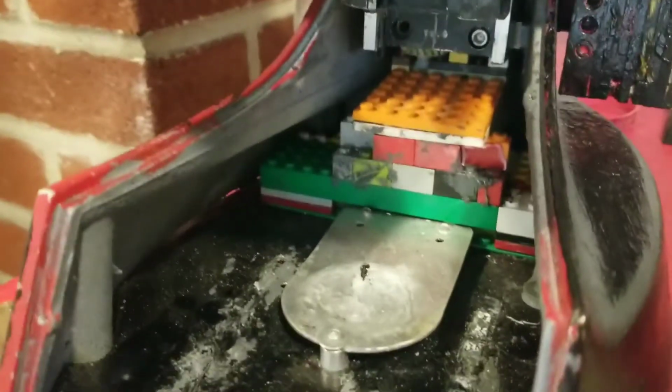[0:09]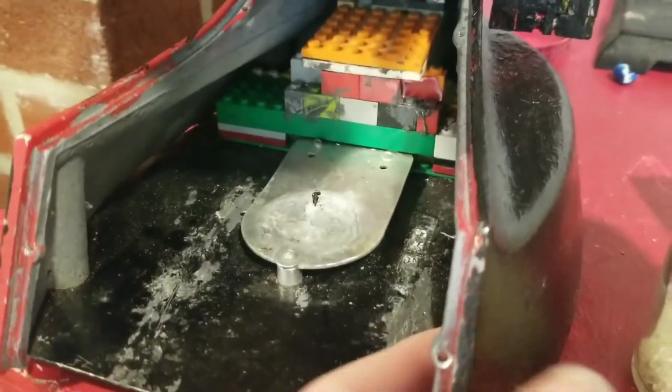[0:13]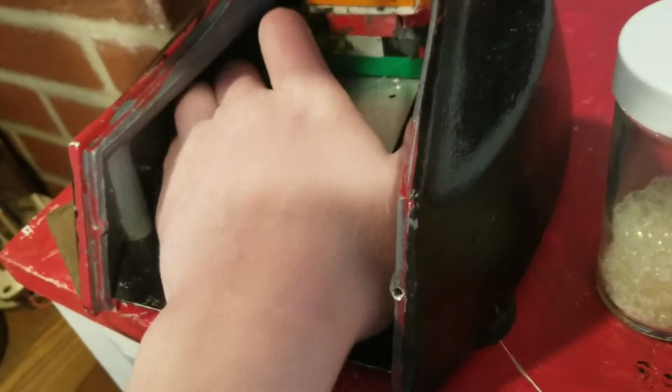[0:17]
So anyway, I'm going to repair my microscope. You can kind of see a little space there, and that is because one of the screws that I screwed in, I used Loctite, and I tried to unscrew it. I broke it off, so yeah.
What I'm going to do is I'm going to remove the head first. It seems like about the right length, and this thing is about the right width. So what I'm going to do is I'm going to use my drill and get through there. Here we go. So this entire thing has been drilled out. Now it is time to stick this thing through. Go nice and tight, just like I want it to be.
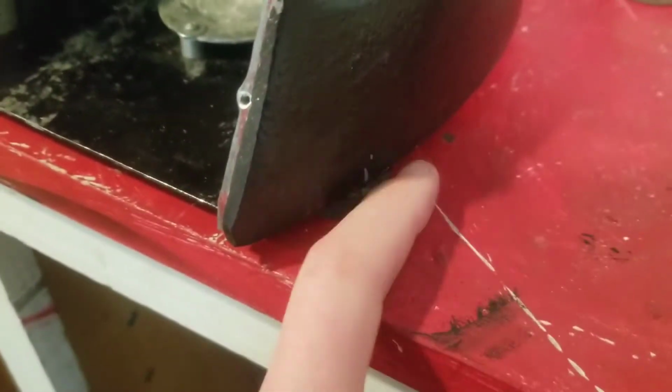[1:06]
Now I gotta take this thing and essentially I've gotta super glue it back on where we go. I added these things on that I found while cleaning the basement because it was scratching up everything. Because I used screws in all of these holes, and I lost the rubber things that go on the bottom, so I have these ones instead, which work almost as good. Anyway, now to reassemble the head.
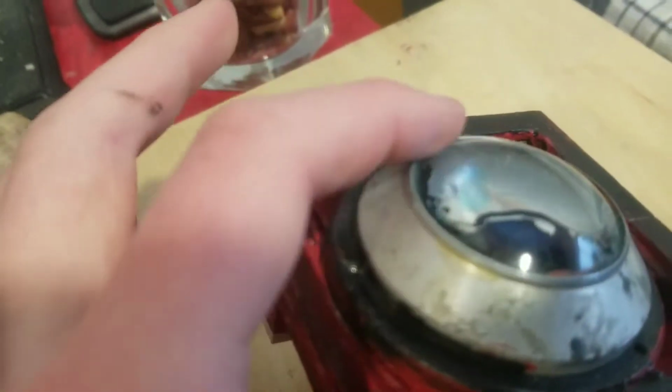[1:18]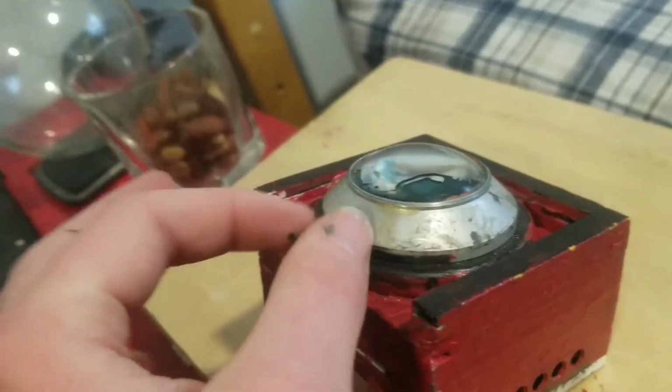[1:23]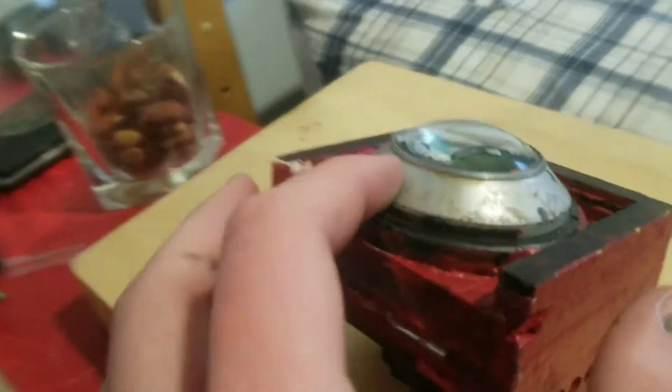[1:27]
Remember me putting this together? I don't know if it's even posted still, but I put this together. I added a polarization filter, and then I took apart a magnifying glass and I added another lens in there. So there are two lenses. There are also two lenses up here, one big and one small, and an LED bulb. And what I'm going to set up is what is known as Kohler illumination.
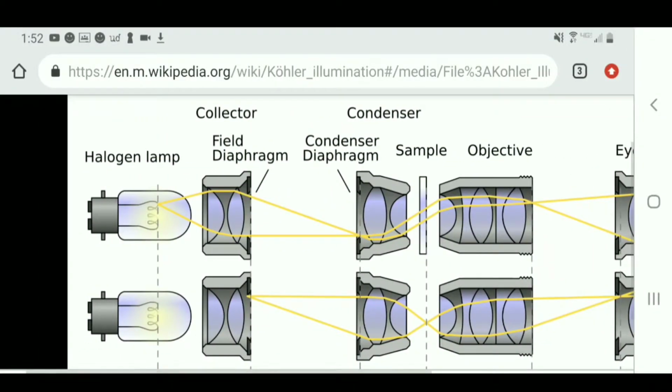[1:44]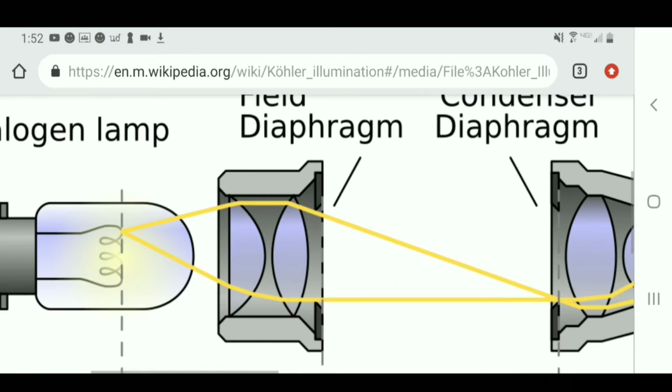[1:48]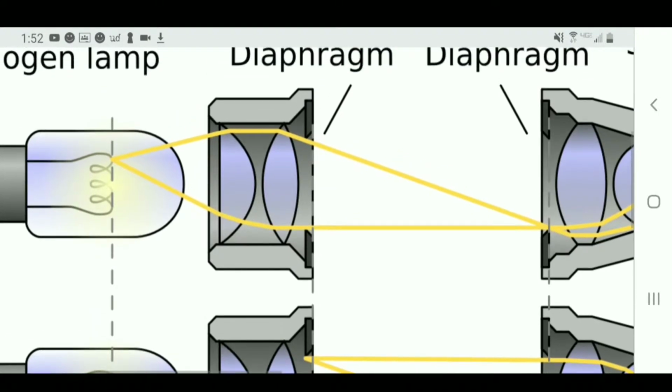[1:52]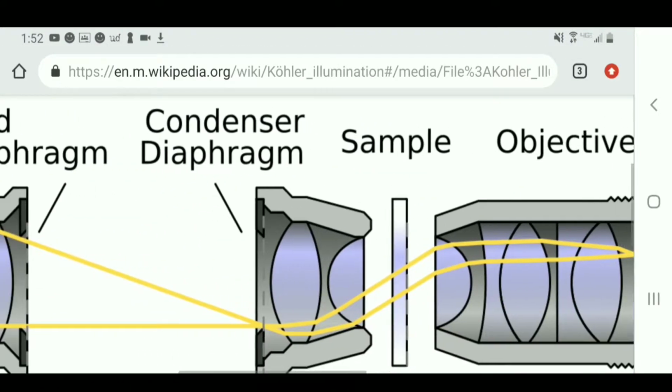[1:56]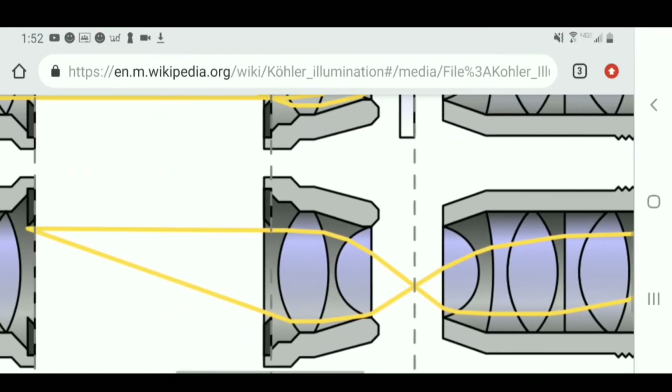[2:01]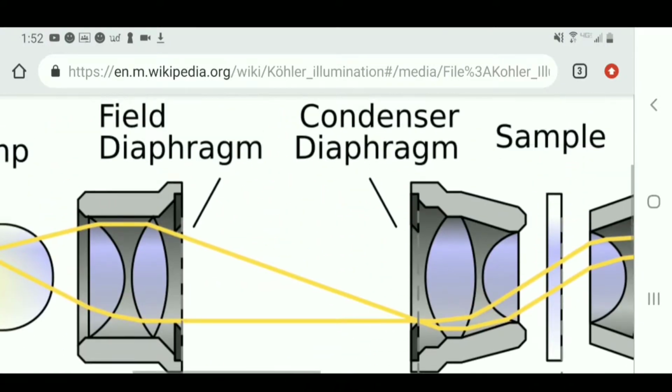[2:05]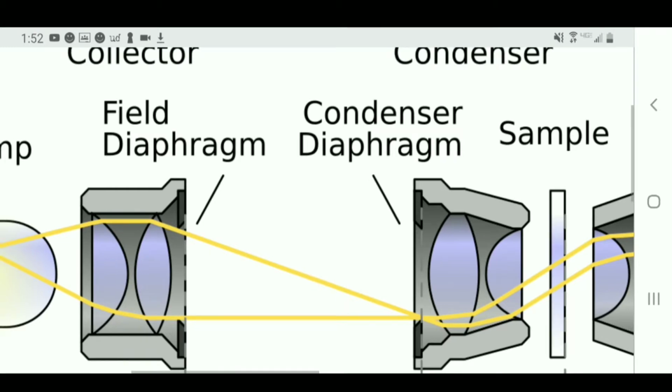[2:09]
Actually, Kohler illumination uses two optical lenses at the collector, just like I have set up. It uses two lenses at the condenser as well, and most importantly what it has is a diaphragm for opening and closing and adjusting light at the collector and the condenser, so it has two diaphragms.
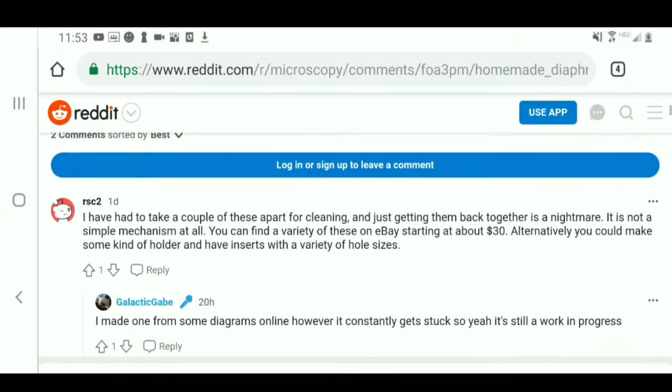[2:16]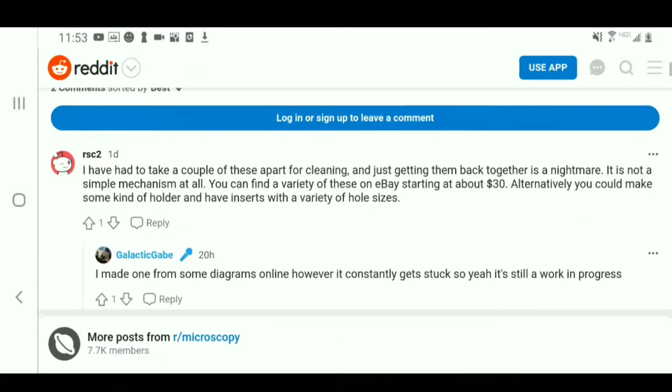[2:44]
My diaphragm, essentially what happened is it fell apart while I was trying to mess around with it when I was taking apart and fixing my microscope, and it was a bunch of pieces. It was really complex. I kept trying to fix it and put it back together, but the metal was really thin and sharp, and I kept cutting myself. I got really frustrated, and I just threw all the pieces of the diaphragm in the trash. So it looks like I'm gonna have to start from scratch on making a diaphragm.
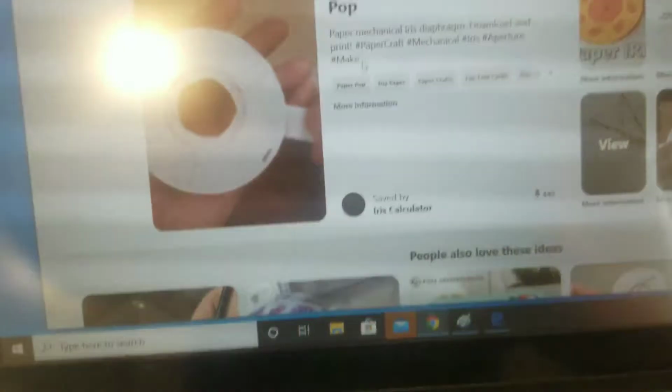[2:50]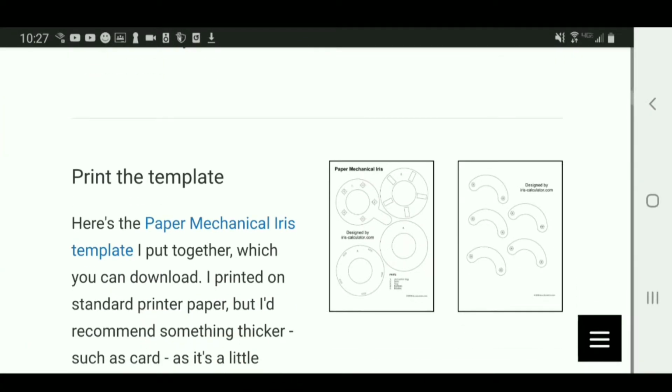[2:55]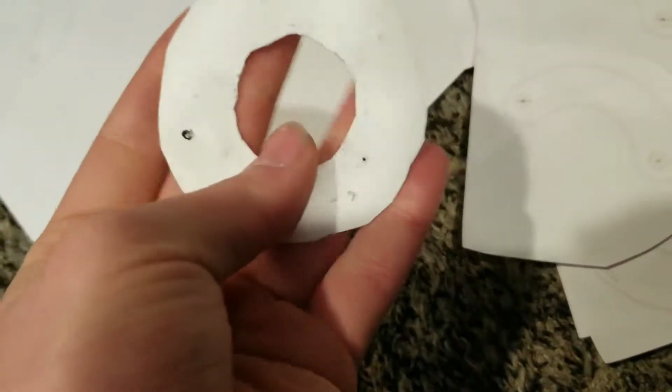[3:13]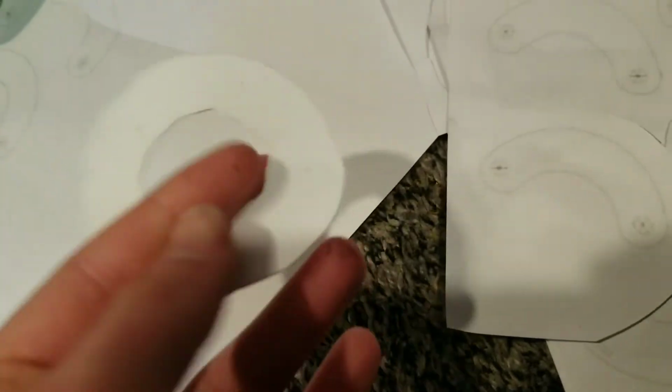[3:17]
As you can see, people do make paper diaphragms. I found a really good website with printouts, and I got the printouts and I sized them to be the right size. I printed them a few times and then I just got as close as I could. Cut them out a little bit, and then I realized that I don't really want paper ones. So what I did is I got some number 2 HDPE plastic shampoo bottles, and I basically replicated the cutouts, but I used plastic, which is a lot stronger than paper.
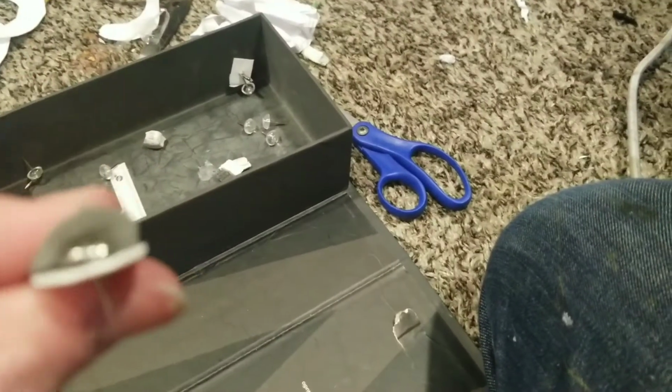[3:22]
See, I am adding one of these. I don't know exactly what they're called, but you can get them at arts and crafts stores, and they work a lot better than thumbtacks for this application. So I'm going to add a piece of tape over the entirety of it so that this thing is covered. The tape allows it to glide a lot smoother. So I'm going to hold the camera between my legs and just show you the opening and closing. Check that out. I finally got it working.
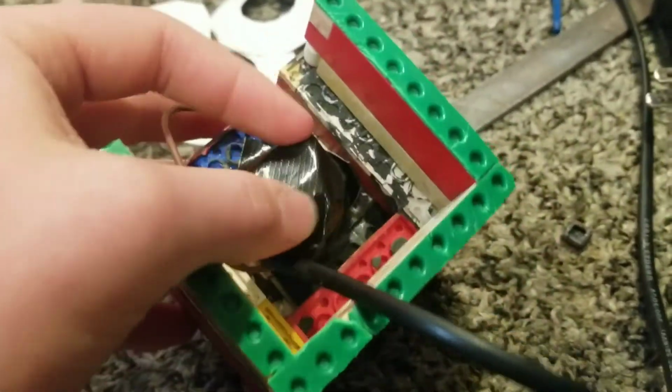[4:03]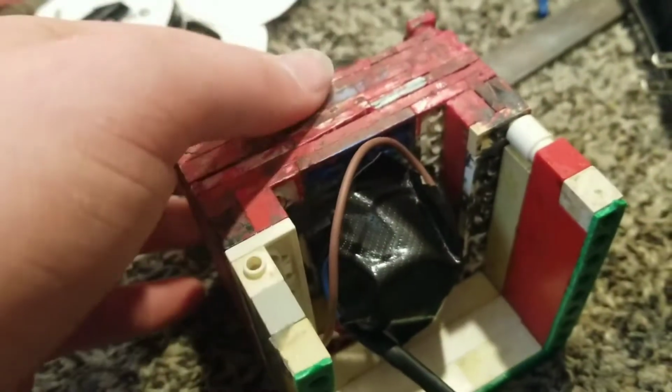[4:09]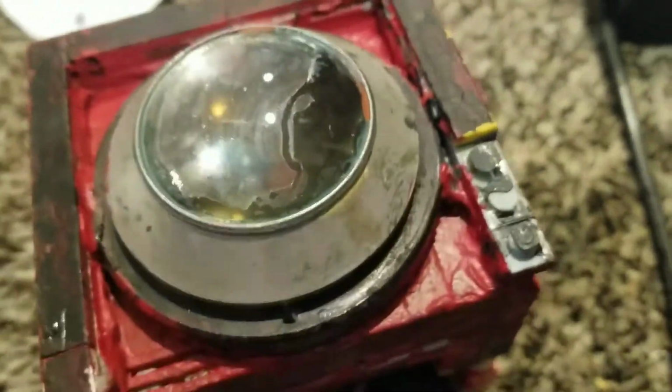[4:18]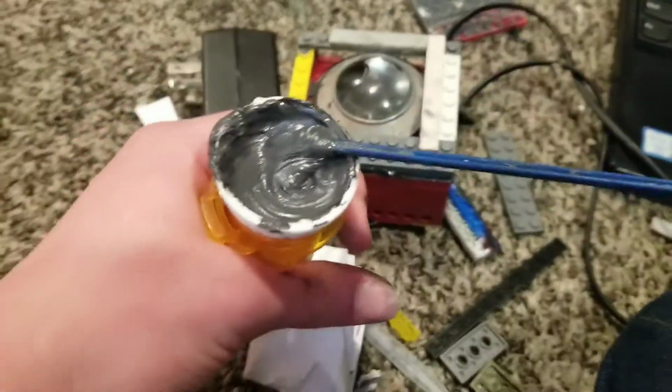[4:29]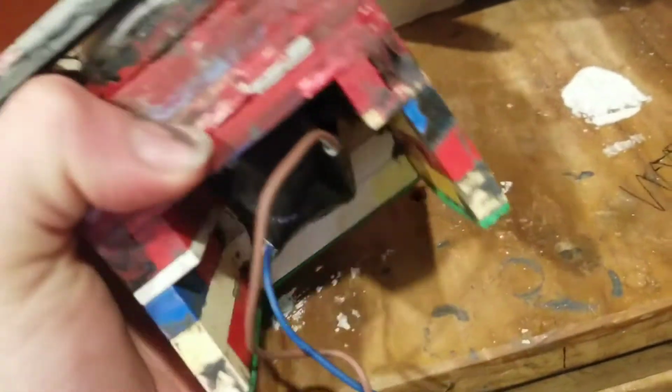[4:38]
This is the light from my microscope. As you can see, it's a bunch of JB welded together Legos and a 9-volt super bright LED light bulb, disassembled partially, and the head of the light bulb replaced with two lenses, just like one of those Kohler condensers. And now what I'm going to do is start building up around the edges again and JB welding it together. I'm JB welding together a top, and on top of this I will be able to add this assembly of the lighting system. I did it in two parts, but anyway.
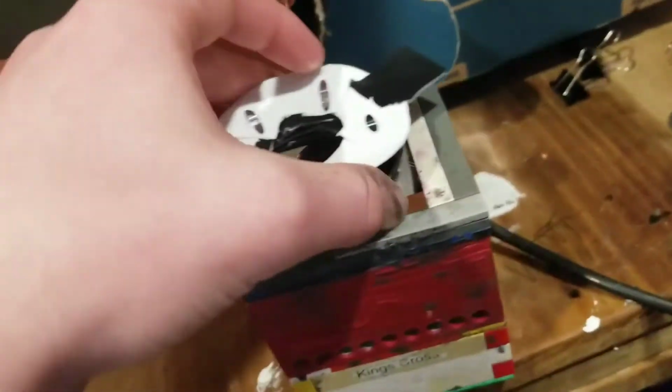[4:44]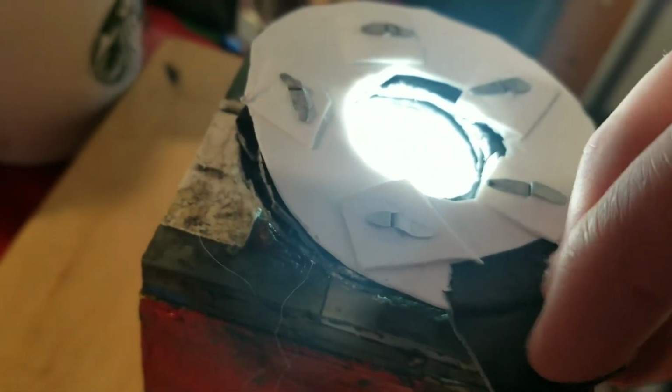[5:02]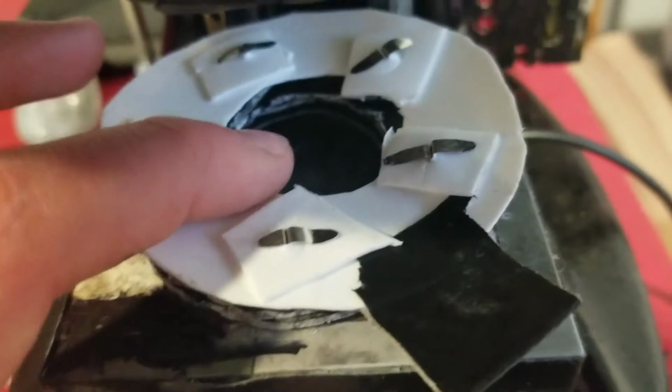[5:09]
And now it is time to center this way. Look at this. You can open and close it at will, allowing you to adjust the amount of light. Instead of having two diaphragms, since it took so dang long and it was so frustrating to build this single diaphragm, I've decided to have one diaphragm on top of the collector, since I don't really need a second one, since I do have a dark field filter and polarization for up here.
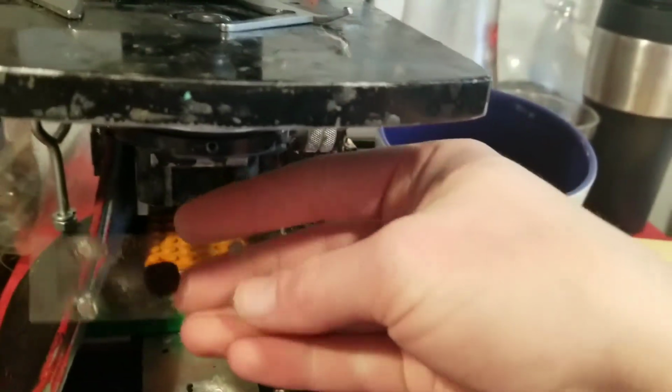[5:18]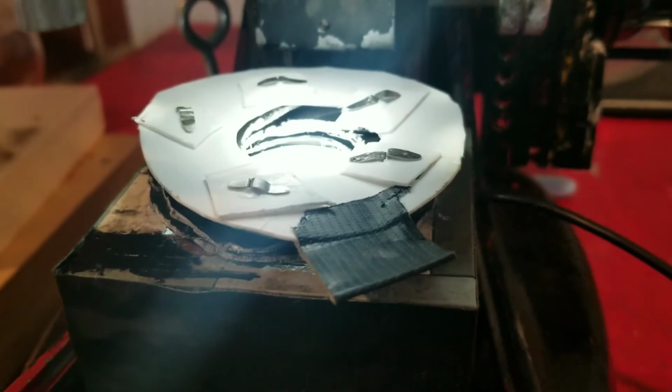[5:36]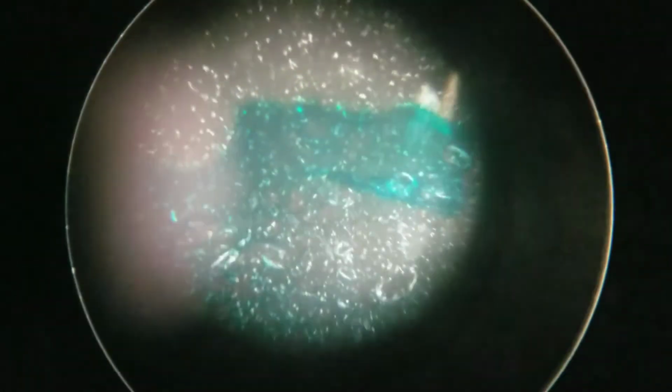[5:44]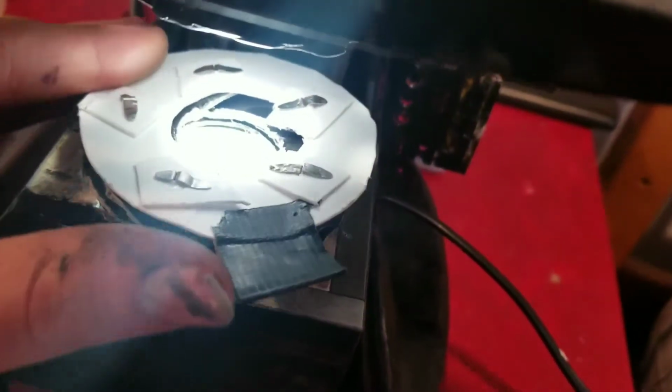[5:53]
As you can see, I have a small dark field screen, which blocks out the center of light instead of around like a diaphragm. Put away the dark field filter, since with the diaphragm completely closed, we won't be able to see anything with the... And I aligned it perfectly, so all there is to do now is just to wait. So as you can see, it is very useful for adjusting light for a certain specimen or magnification. I can dim the light, increase it, or do whatever I want with it with this aspergillus. So anyway, yeah, hope you enjoyed, and see you in the next video.
The JB weld is on, and it's mostly dry. Well, it's been a couple of hours, so it's starting to dry and harden, but